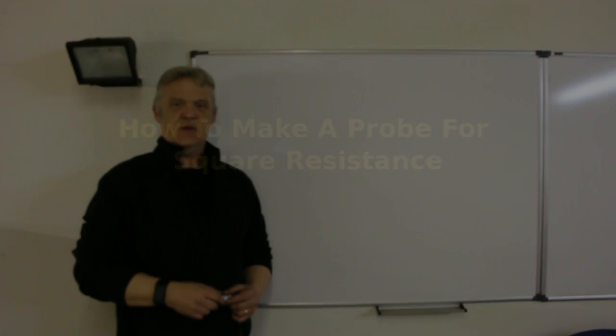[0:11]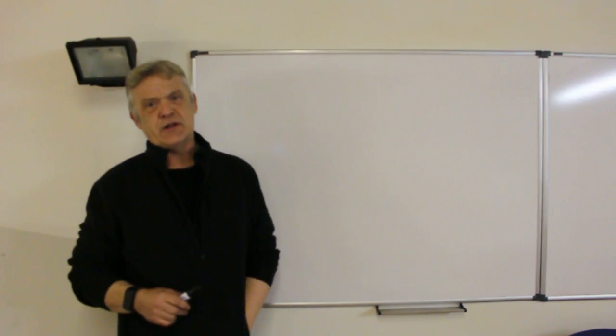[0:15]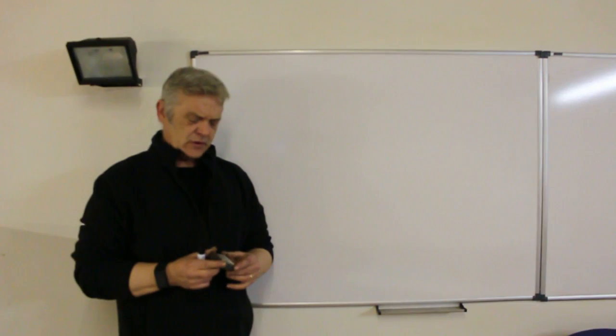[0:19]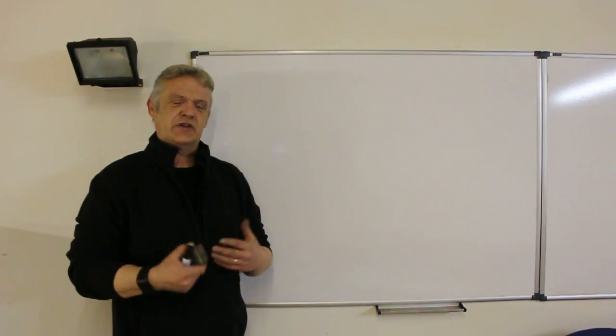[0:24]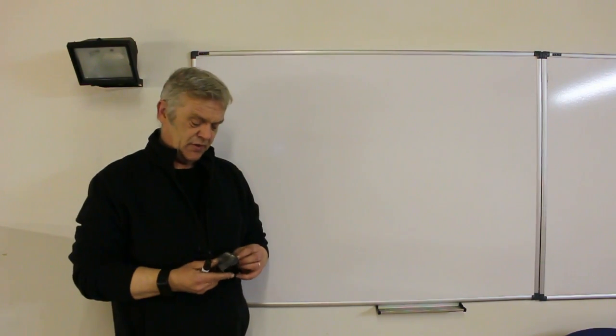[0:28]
So I've been meaning to do this video for ages. It's a really simple one. It's revolving around this thing, which is a square probe. And it's used for measuring the resistance of thin films, sputter coatings, ink coatings, paint coatings, that kind of thing. And I've used this quite a lot. A lot of people have said to me, how did you make it?
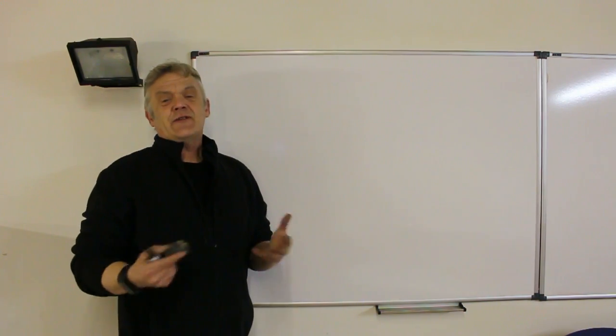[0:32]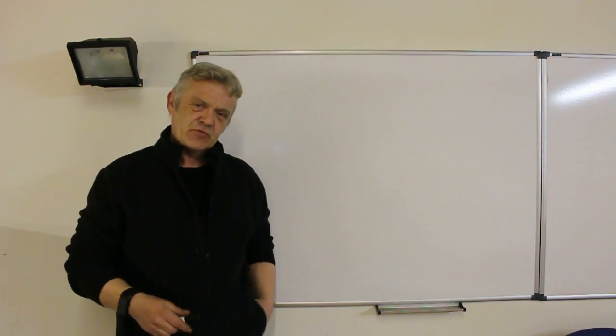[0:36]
So the plan of the video is to explain it a little bit, and then to show you how to make it, and then we'll use it to take some sheet resistance measurements. So the first question really is, what is sheet resistance? And in order to think about sheet resistance, we want to know about resistance per se.
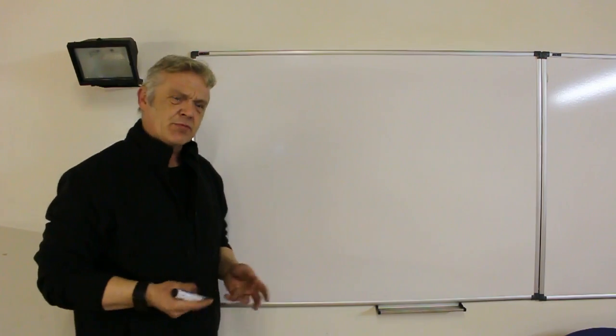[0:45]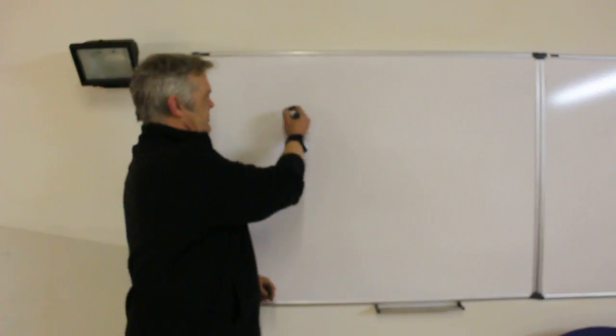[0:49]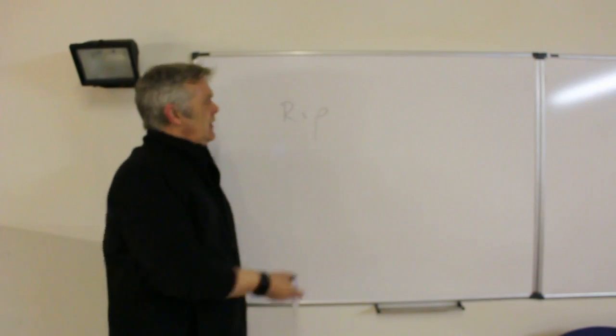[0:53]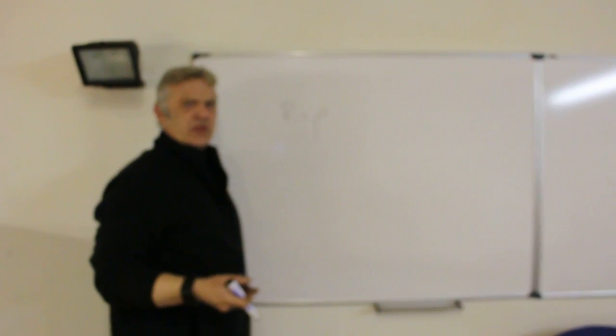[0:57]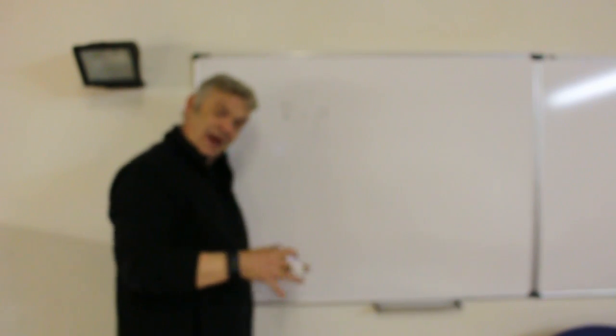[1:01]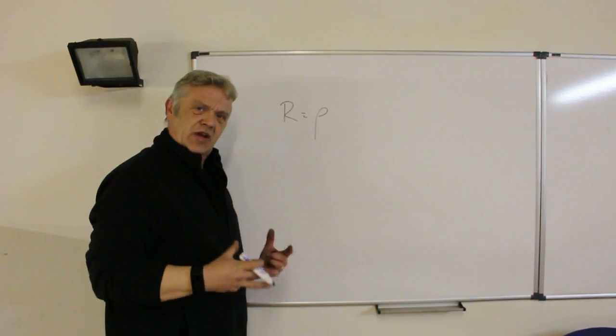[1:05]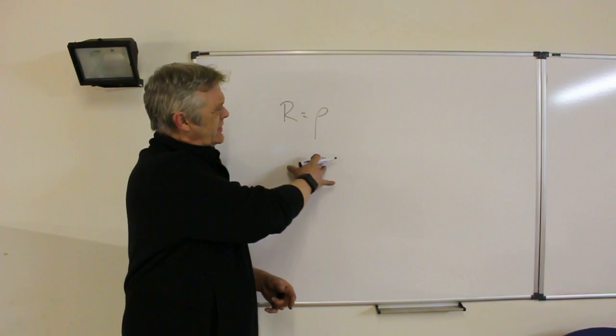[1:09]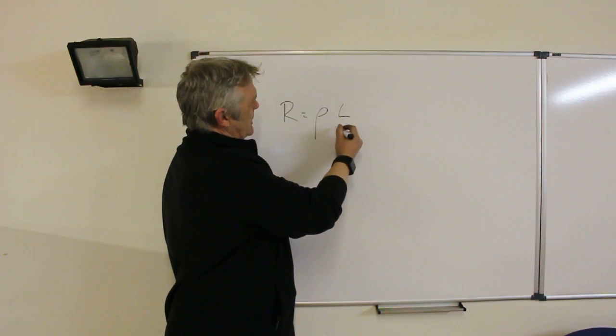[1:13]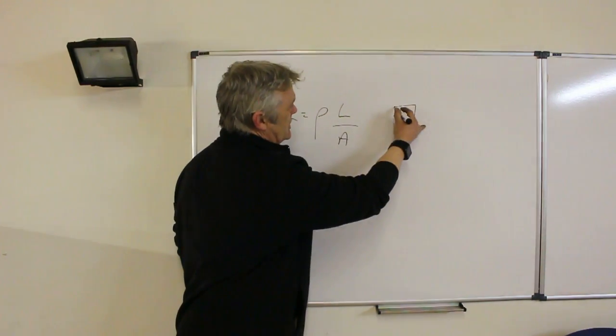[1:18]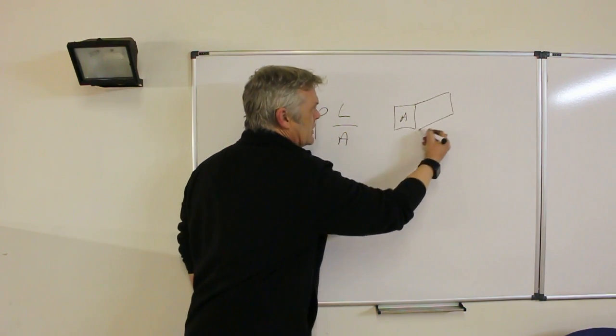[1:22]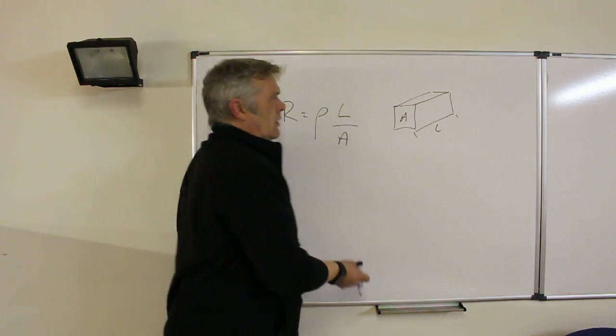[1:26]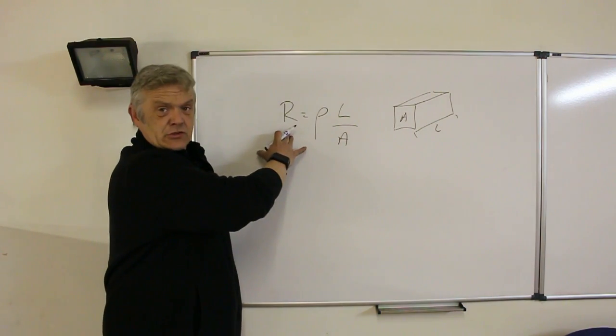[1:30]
Now, resistance is a property of a material dependent on the geometry of the material, because resistance is equal to rho, which is the resistivity. Now, rho is an intrinsic property of all materials. It's the resistivity of the materials. But when we're using an actual material and taking the resistance of it, we have a lump of something of a certain size, and it will affect the resistance, but not the resistivity. So the resistance is equal to the resistivity times the length divided by the area, because we're looking at a block of material. This block of material has an area of some kind of length. And those geometrical factors will affect the resistance of the overall block of material that you're using.
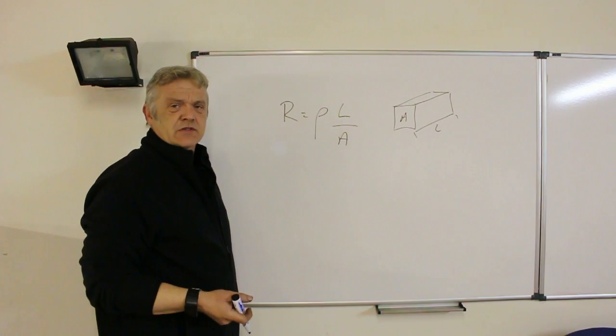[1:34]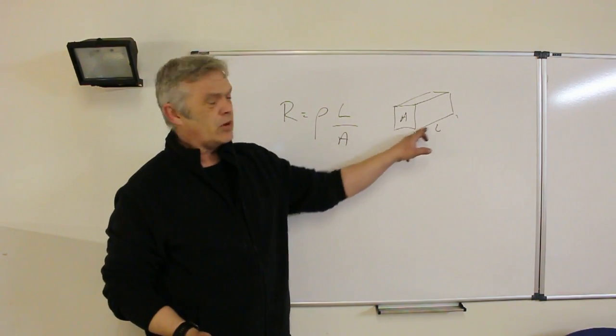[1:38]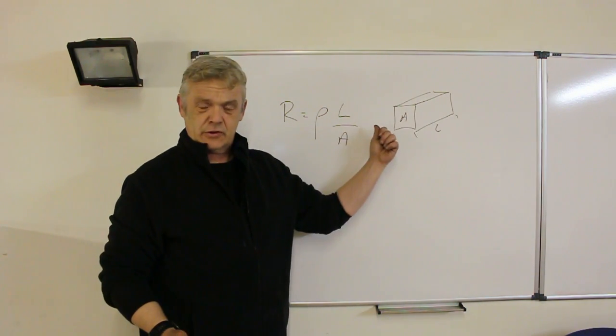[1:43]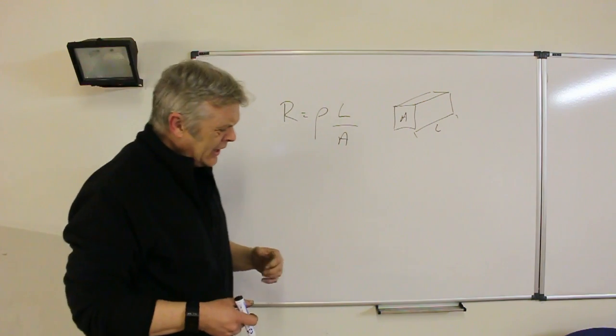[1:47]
Now, when you're measuring resistance of a block of material, what you do is take 1 centimetre by 1 centimetre by 1 centimetre, slap on a couple of copper plates, and take the resistance at the end of those copper plates. And that's how resistance of bulk materials is measured. Now, it doesn't quite apply when we're looking at sheets.
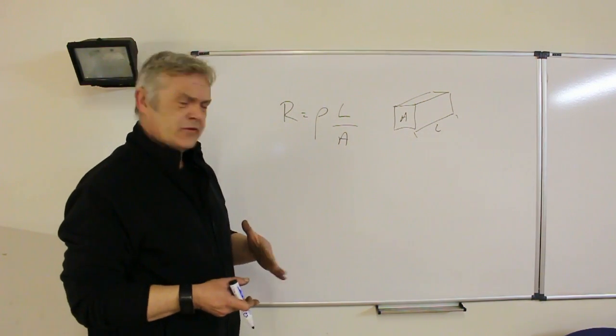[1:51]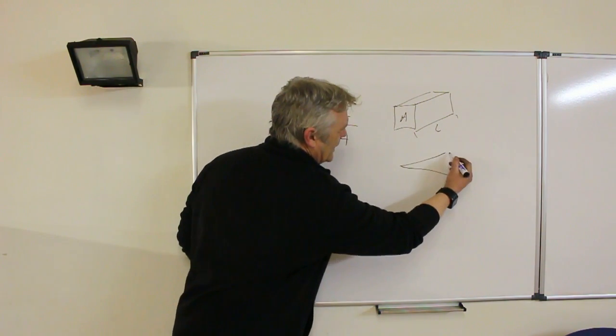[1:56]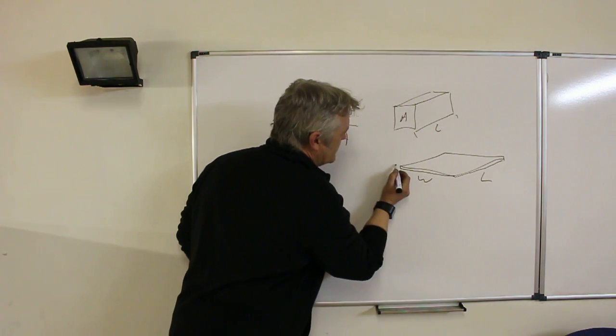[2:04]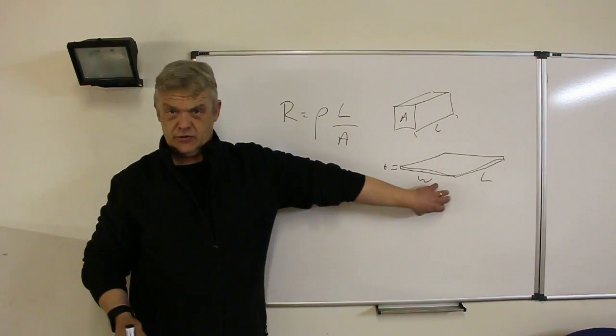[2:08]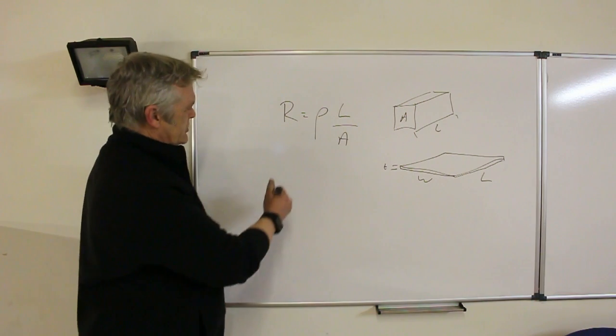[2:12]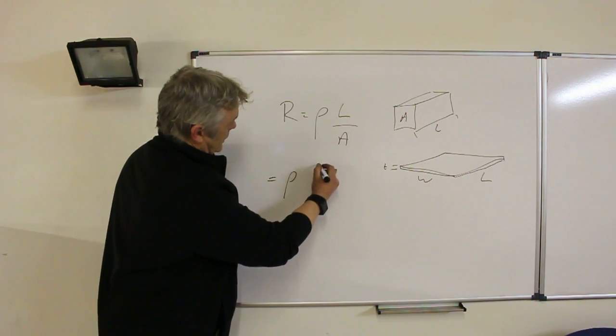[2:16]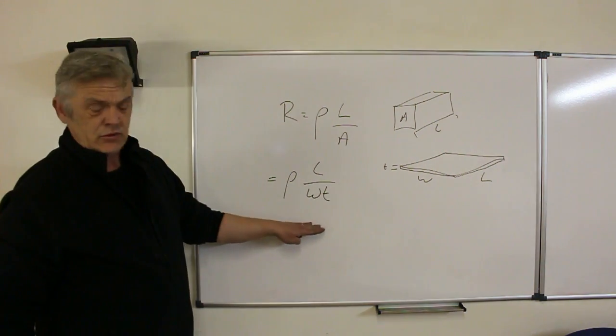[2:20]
Now, sheets are taken to be of uniform thickness. But when we're looking at a sheet, we're looking at a big old plane of something, with tiny thickness, that has some length, some width, and a thickness of T. So when we measure this resistance here, what we're doing is measuring a sheet. So we can say that our resistance now becomes rho times length over width times T. And that's how we're measuring it.
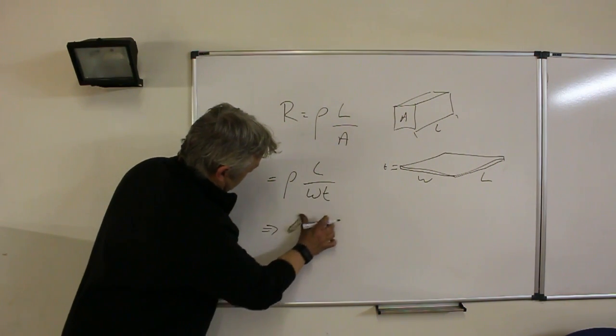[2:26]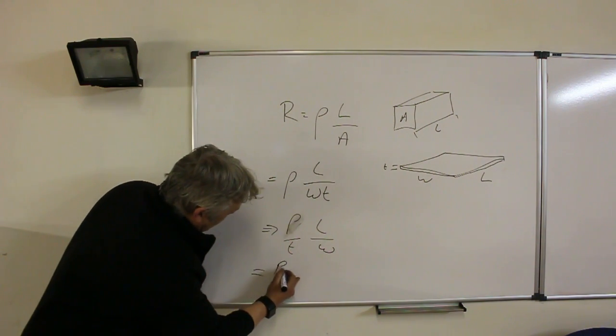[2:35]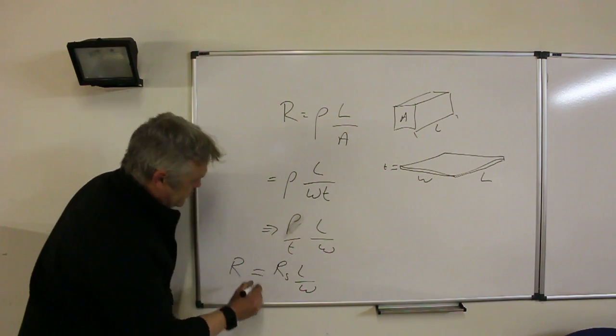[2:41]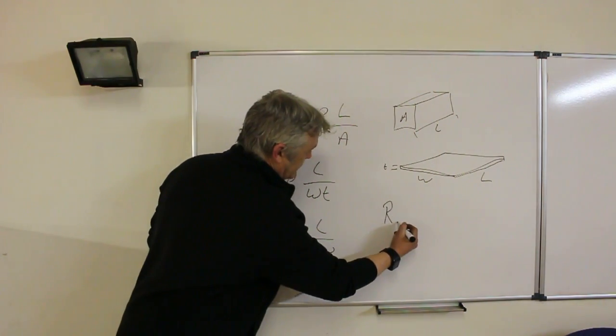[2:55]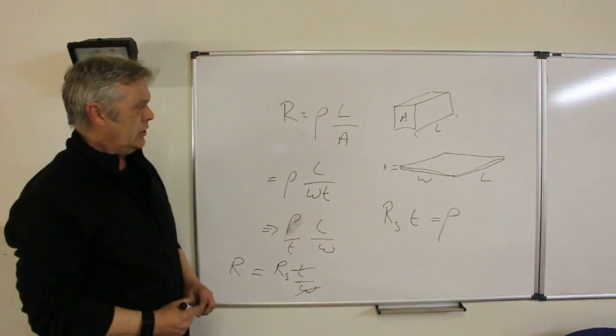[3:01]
If we separate these out, so we get rho over T times L over W, then that becomes RS, which is the sheet resistance, times length over W, which is our resistance. And if these are equal, so this is 10 and this is 10 and this is 8 and this is 8, then these cancel out to give us R is equal to RS, where RS is equal to rho over T. So equally, if we take the RS figure and we multiply that by the thickness, what we get is the resistivity of the material that we've been looking at. So that's how we can use sheet resistivity.
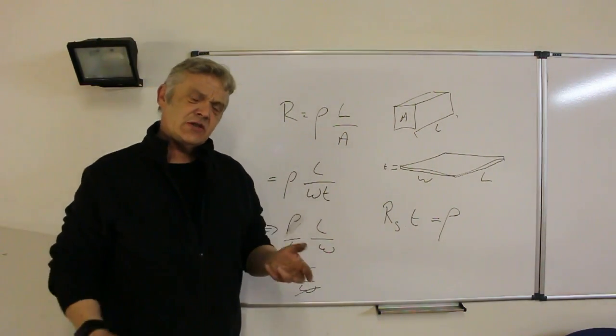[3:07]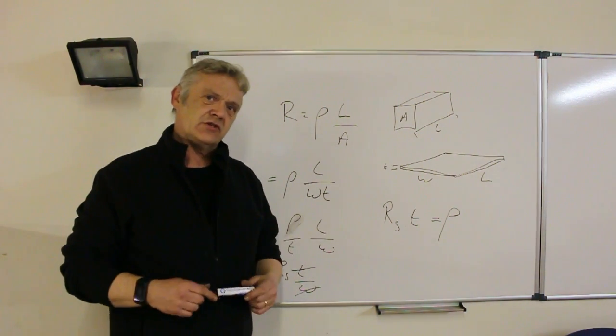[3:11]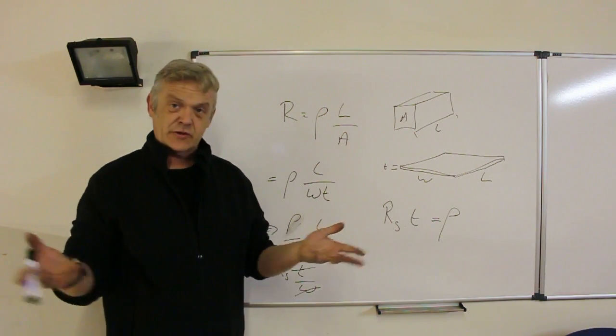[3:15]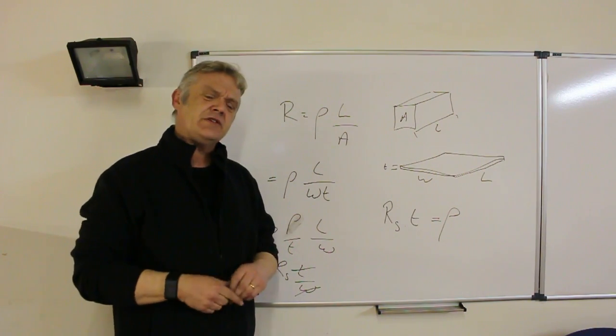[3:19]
But how do you actually measure sheet resistance? Now, sheet resistance has to be on a film of uniform thickness. So there's an assumption there's a uniform thickness. And there's a couple of methods used. One is the van der Pauw method, which is a four-point probe method. And that can be a little complicated and expensive for people to set up.
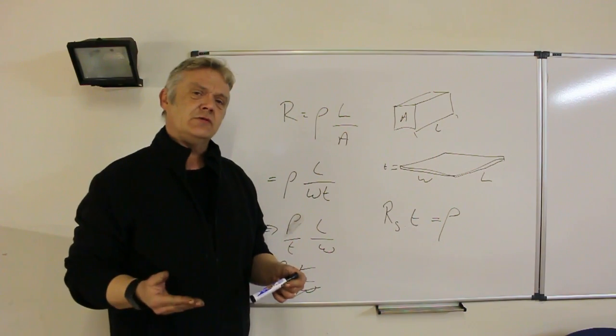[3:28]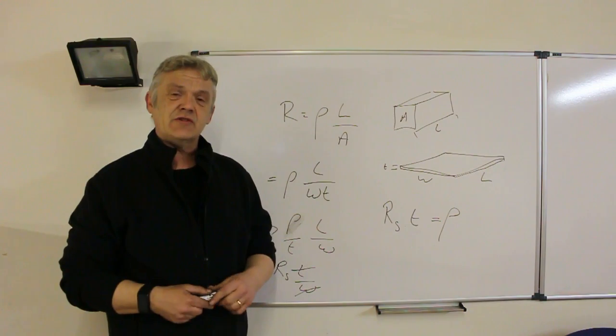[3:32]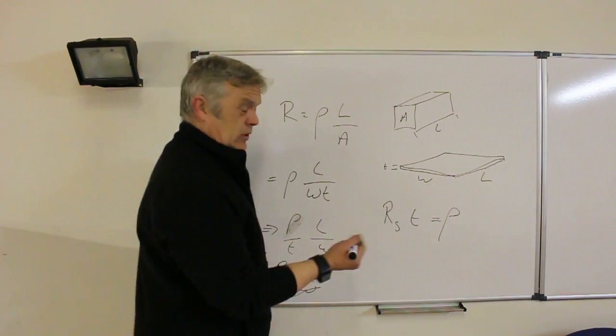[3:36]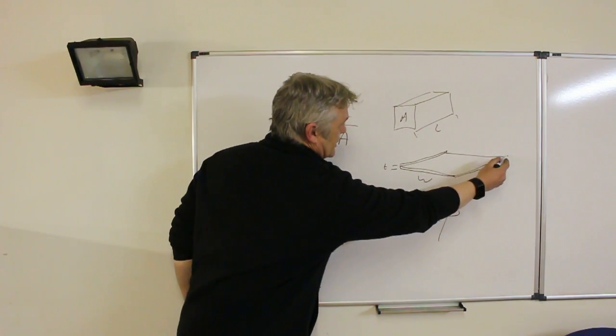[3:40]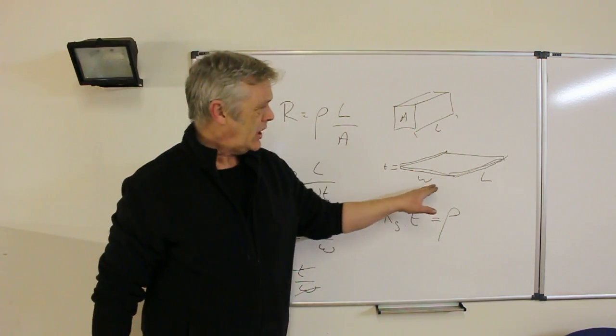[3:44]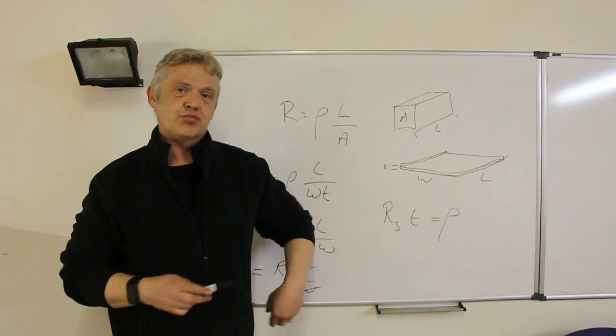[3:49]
So another method is to attach bus bars with an ohmic contact, where the bus bar length is equal to the width of the sheet that you're measuring. So what I'm saying here is, if we stick a bus bar on here and here, and we make sure that those are the same distance apart as the length, what we effectively get is a sheet resistance probe. Now, that's exactly what this is.
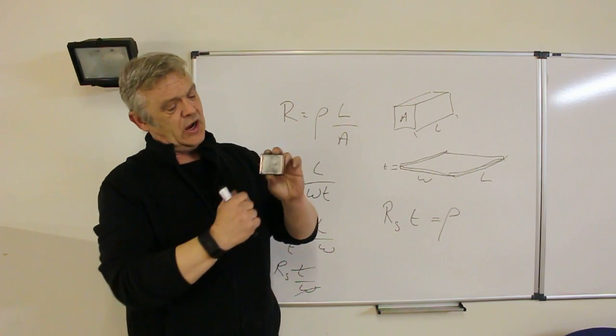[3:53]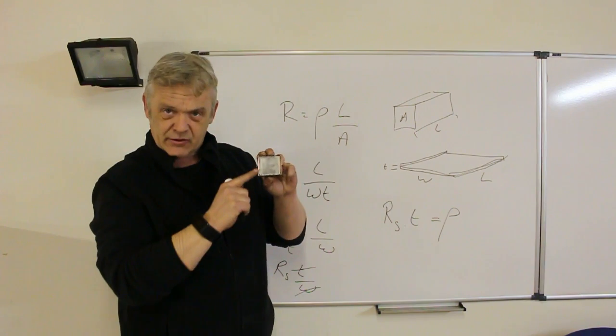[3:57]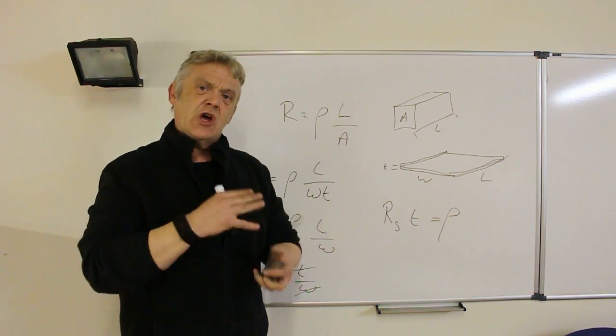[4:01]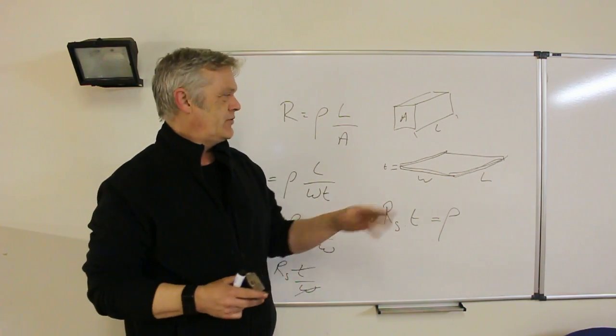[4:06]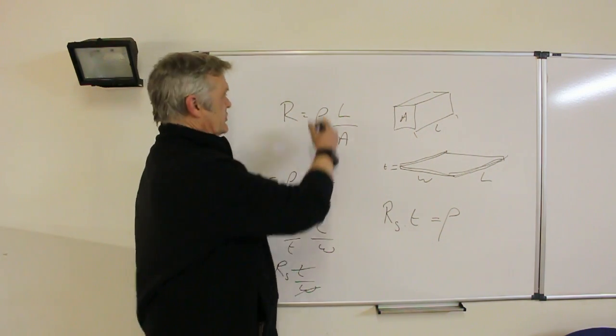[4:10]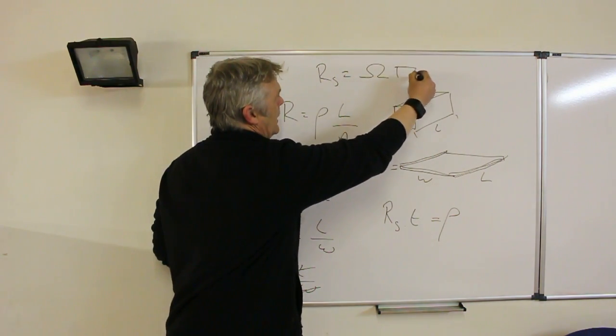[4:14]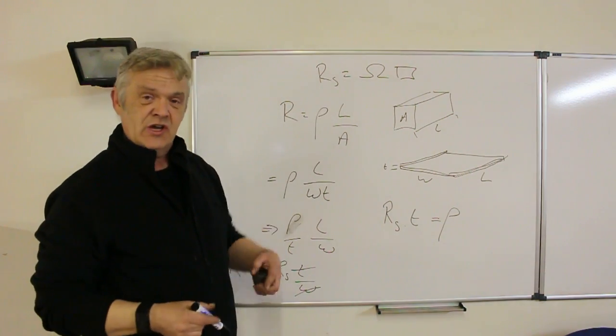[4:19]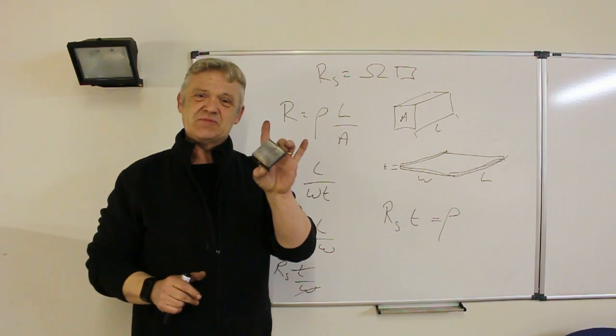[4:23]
These are two copper bus bars, and they're held apart by the same as the length of the bus bar. So when I use that, what I'm actually doing is taking a sheet resistance using bus bars with ohmic contact along the edge of the width of the square. Now, when I do that, the measurement that I get, so RS, is measured in ohms per square. So it's ohm per square, and that's the measurement of RS. So, now we've quickly gone through the theory, let's go off and make one of these.
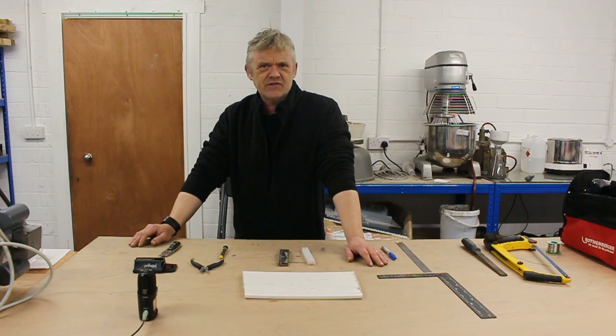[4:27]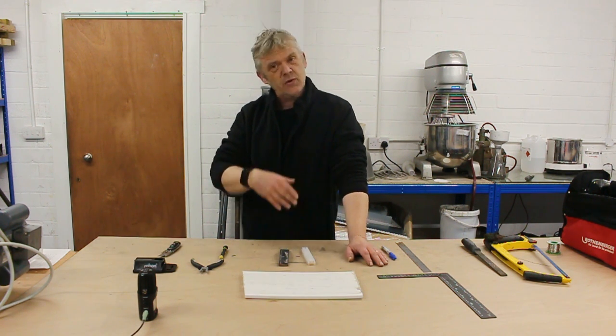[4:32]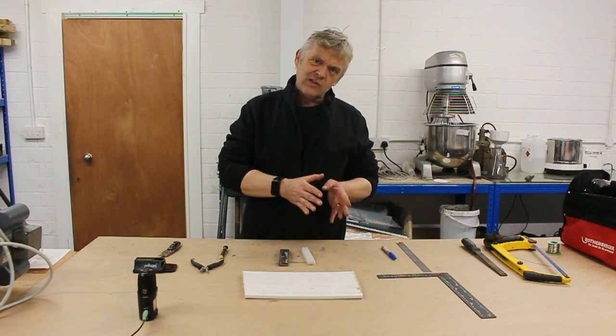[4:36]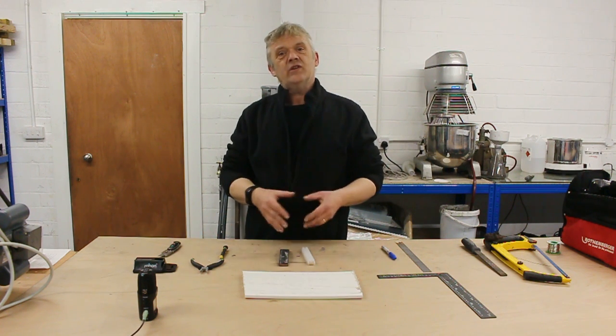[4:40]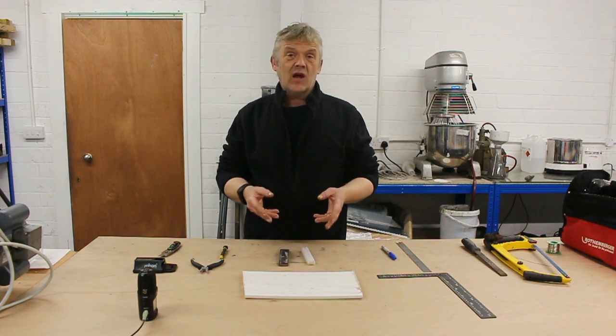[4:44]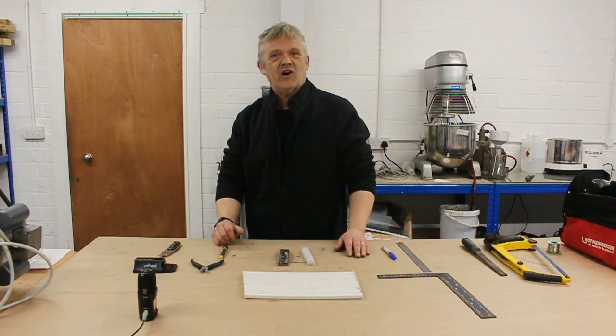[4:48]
So, as we pointed out on the board, one of the curious things about sheet resistance is it doesn't matter how big the square is that you make, because we divide length by width as part of the equation. So, as long as the length and the width are identical, that is, it's a square, then the size of the square is completely unimportant. So you could do 1 centimetre if you like, you could do 10 centimetres, you could do 100 centimetres. It really doesn't matter, as long as the length and the width are the same.
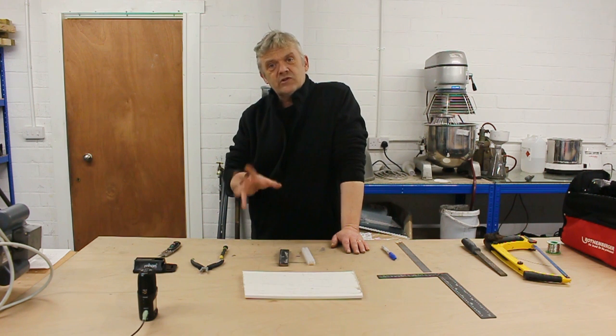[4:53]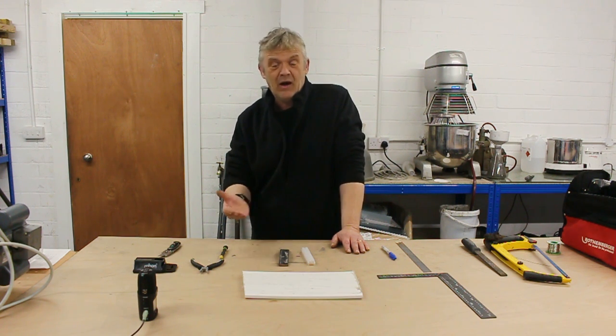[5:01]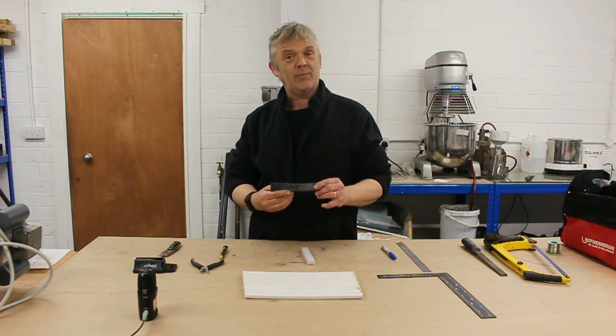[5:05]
So what we're looking for is some materials to make our bus bars, because we're using the bus bar method as opposed to the van der Pauw method. So we need something to make our bus bars, and of course there's nothing better than copper. Now, we can get a lot of copper from all over the place, and I just so happened to have a bit of this.
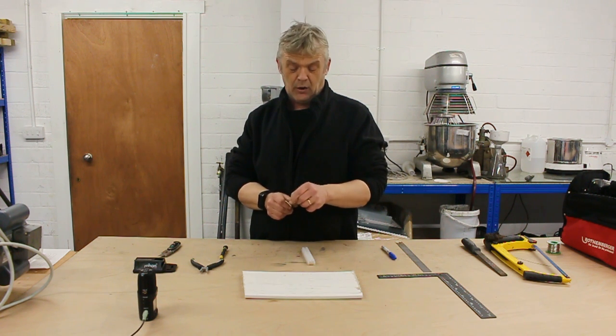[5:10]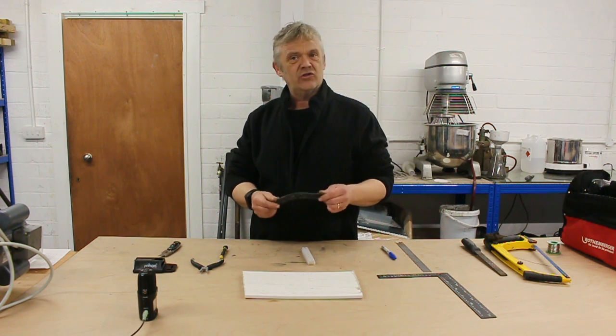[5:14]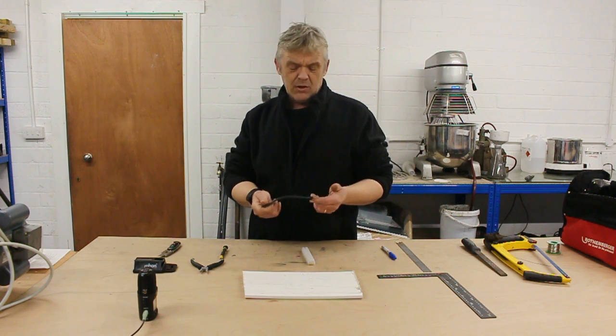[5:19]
This is a bit of old lightning conductor. It's a solid copper rod covered by a plastic casing. I had a length of this from somewhere, and I'm going to use that to make my probe with. Now, this is scrap, but you can buy this stuff in the bar that you see here and use it nice and clean. We're using scrap, so we're going to have to clean it up.
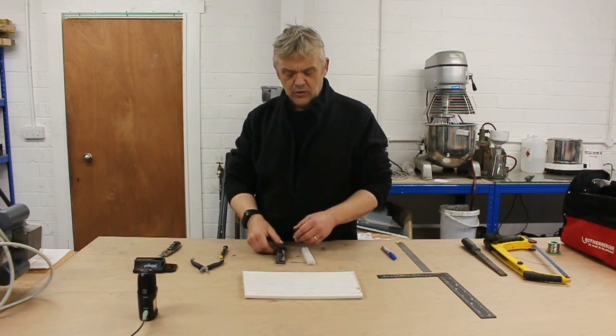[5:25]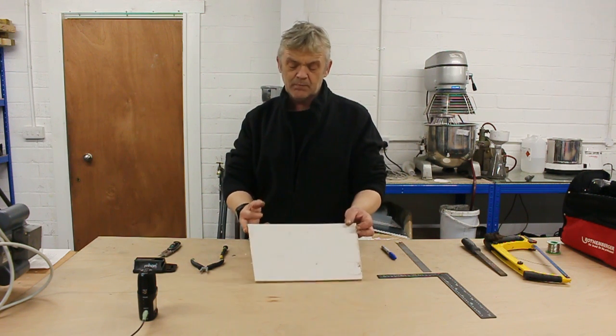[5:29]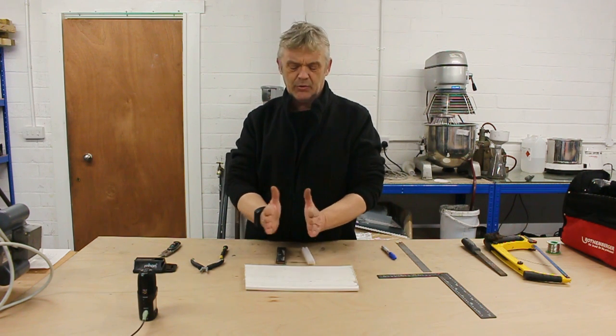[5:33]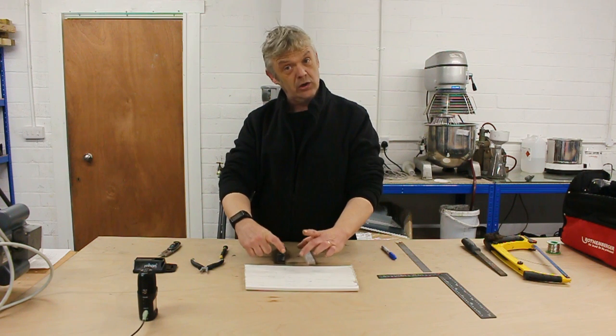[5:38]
The other thing I'm going to use once I've cut the sizes is a piece of this stuff. This is builder's board. I'll cut the square out of this that I want, allowing for the thickness of the bus bar, so I put the two bus bars together, then they'll be held apart by the same distance that they are long. And that's the basis of my square probe.
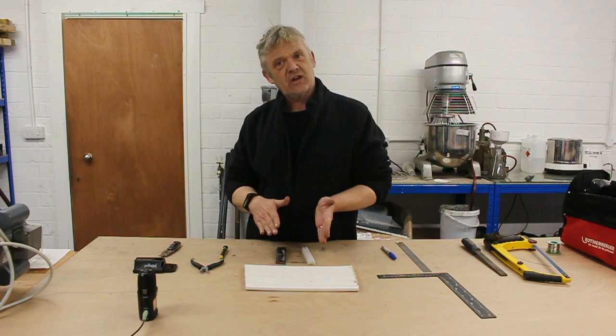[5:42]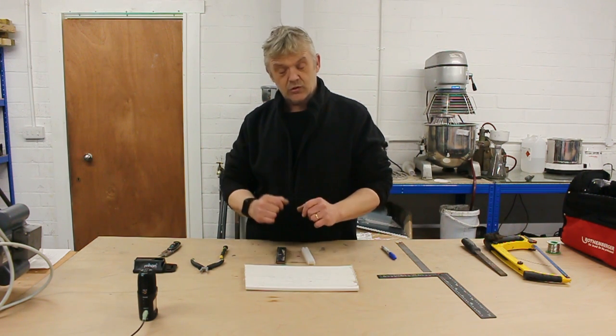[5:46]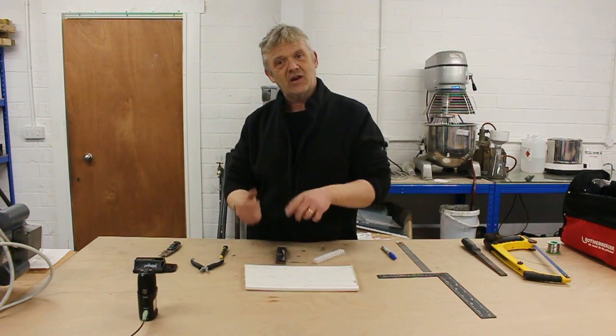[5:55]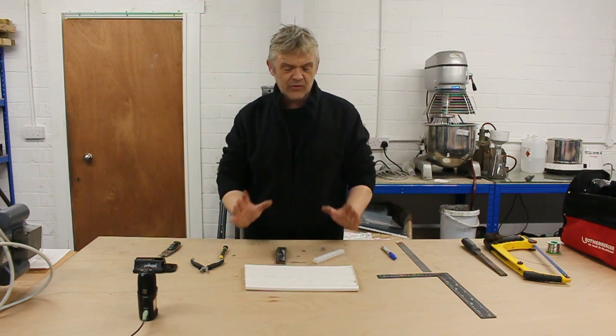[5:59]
Now, in order to get something nice and easy so that I can put the probe tips in from the meter and screw them down and get a good contact, I'm going to use this to make some contact. So I'll cut the brass bits out of here, flatten the edge, solder them onto here, and then I can drop my contacts from my meter into there, screw them tight, and I'll have myself a square probe. So that's what we're going to do.
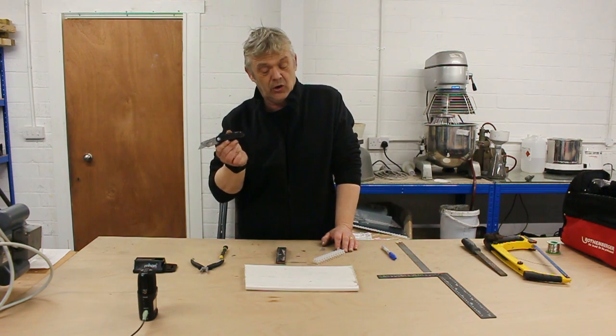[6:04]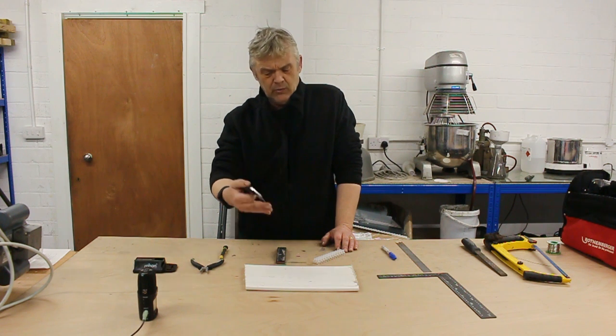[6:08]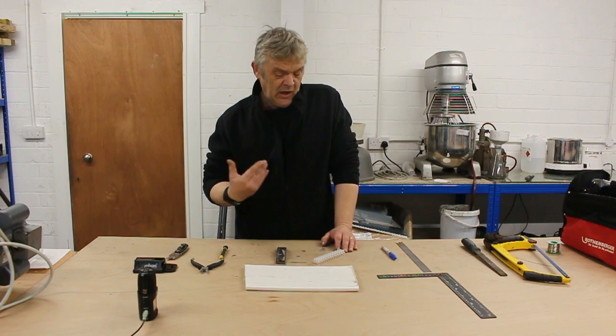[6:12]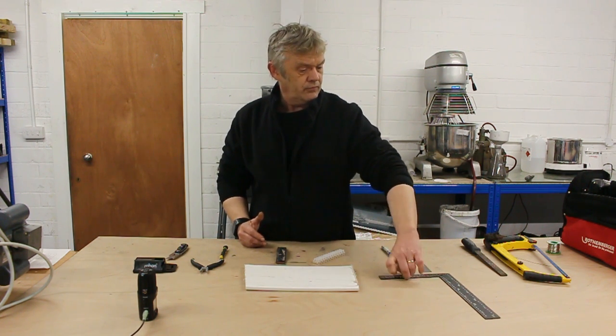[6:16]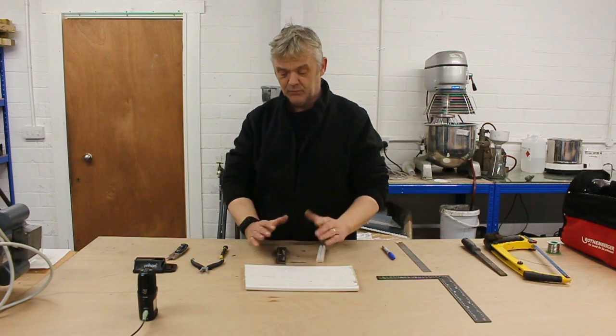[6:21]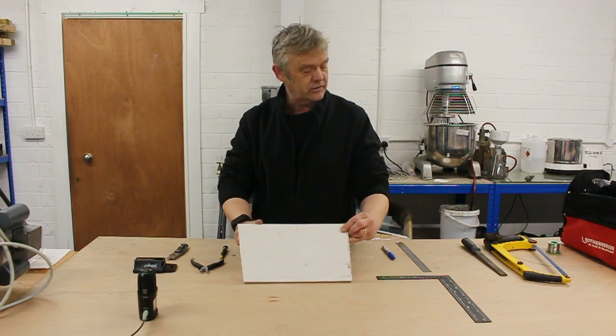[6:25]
Now, to do that, we need a cutting implement for the builder's board, which is a polyurethane with a PVC covering. So a trimming knife blade, a carpet knife will do very nicely. We need a square edge. We need an angle, a nice triangle there, so we get nice square edges. Marker pen, our materials that we've got. Remember, this edge is straight, so we'll be going from this edge in all our cutting and measurement.
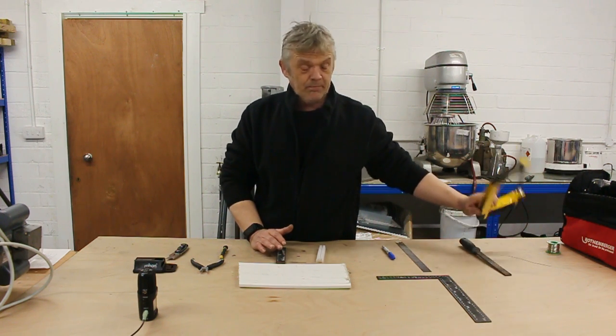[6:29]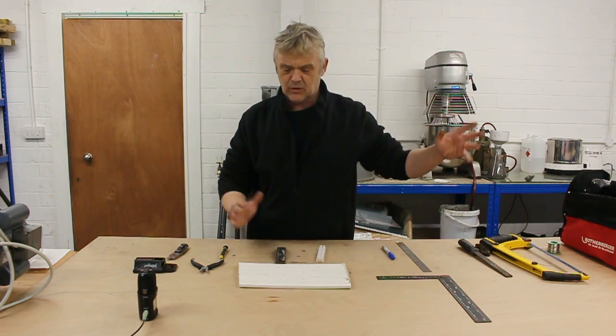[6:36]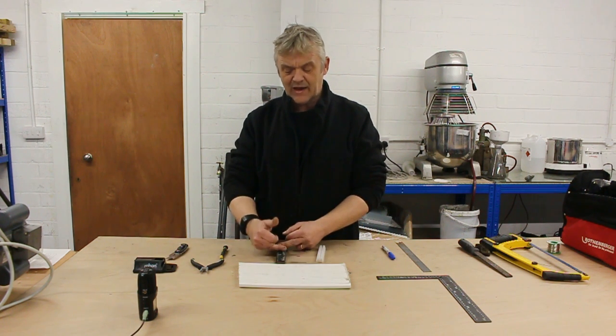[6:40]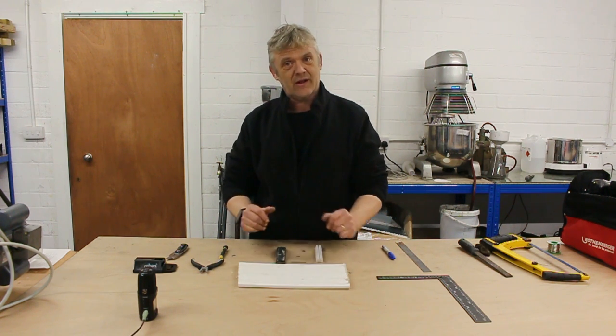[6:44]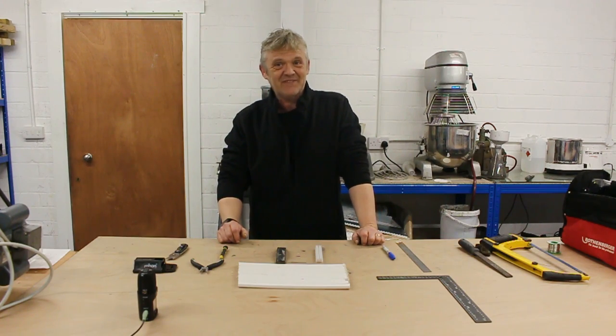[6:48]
We're going to be working with metal, so we need a hacksaw, flat file, some wire wool to clean everything up, and then we have some soldering equipment there. So that's the equipment we're going to need. There's the material we're going to work on. What we're going to do is cut that to length, clean it, solder on these, cut that board to length, glue it together with some super glue, and we'll have our basic probe. So let's get on with that.
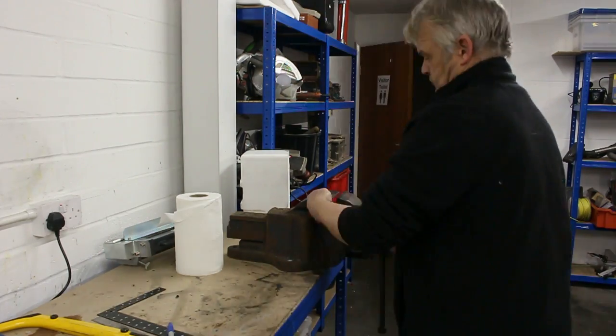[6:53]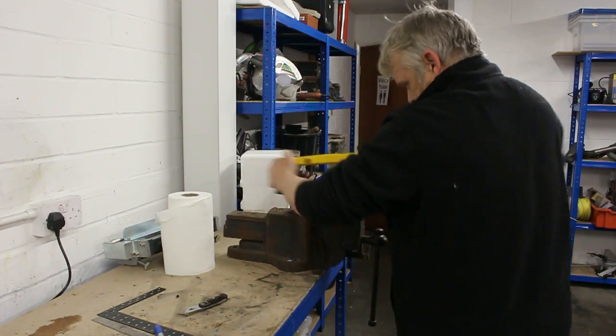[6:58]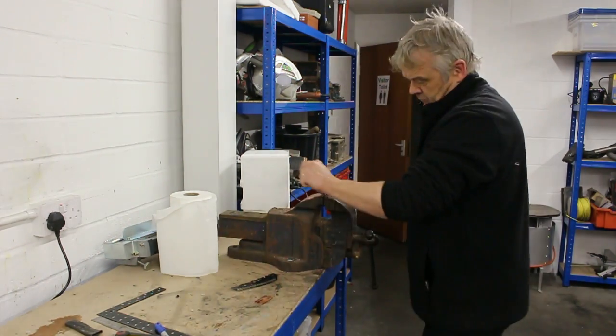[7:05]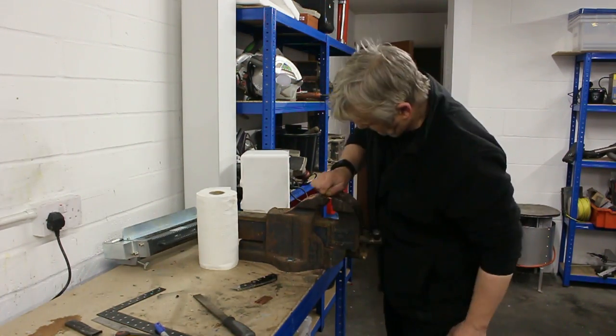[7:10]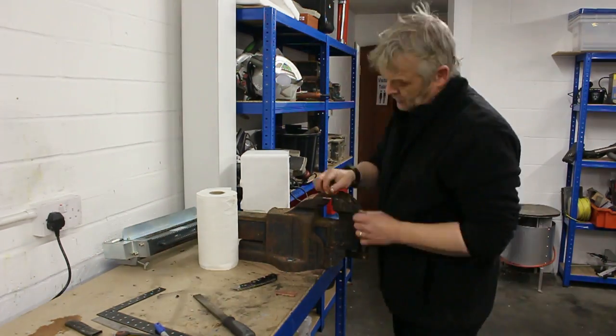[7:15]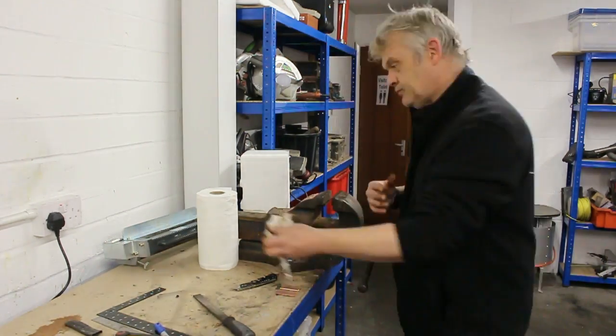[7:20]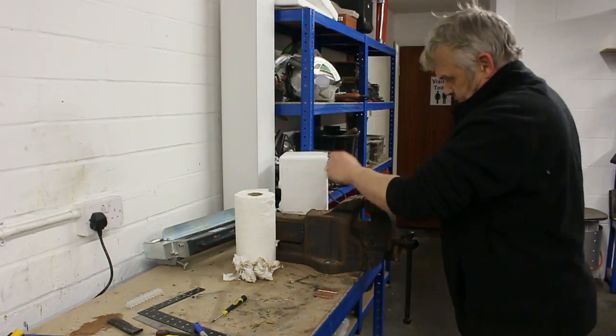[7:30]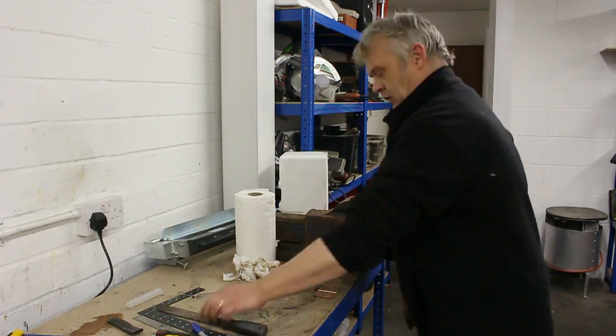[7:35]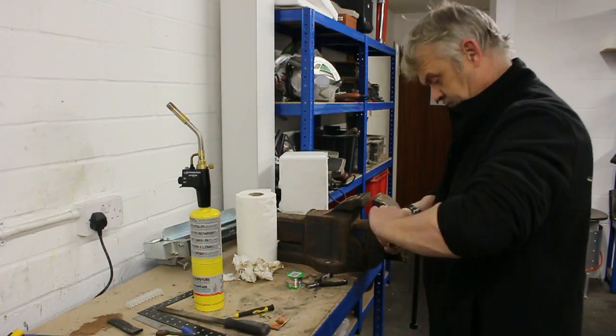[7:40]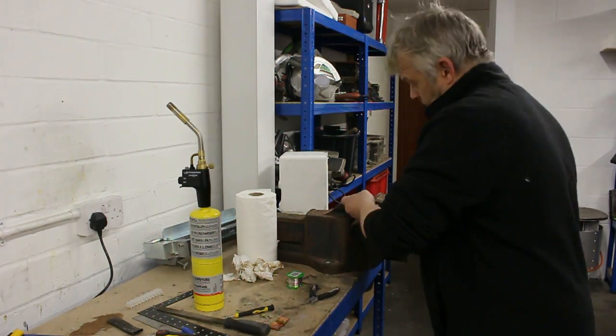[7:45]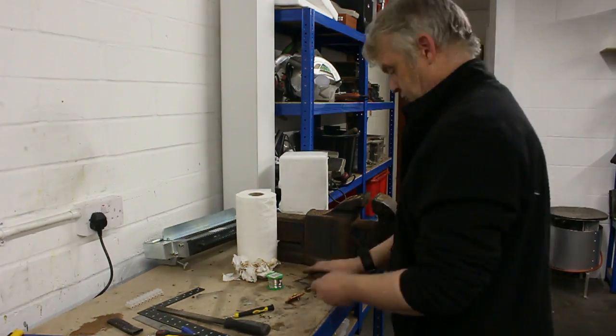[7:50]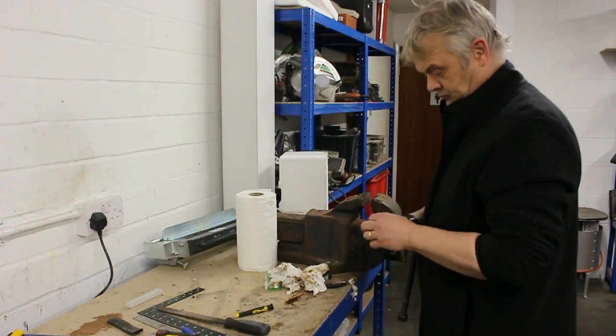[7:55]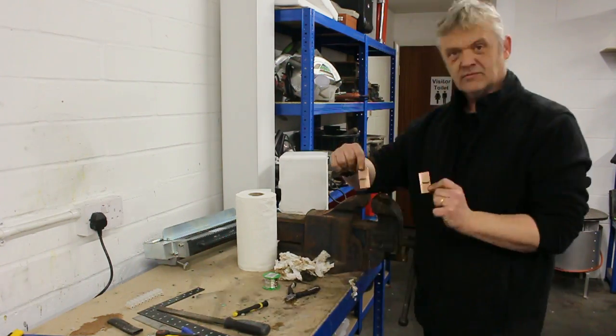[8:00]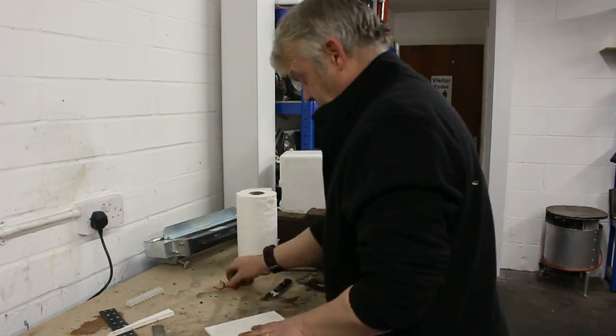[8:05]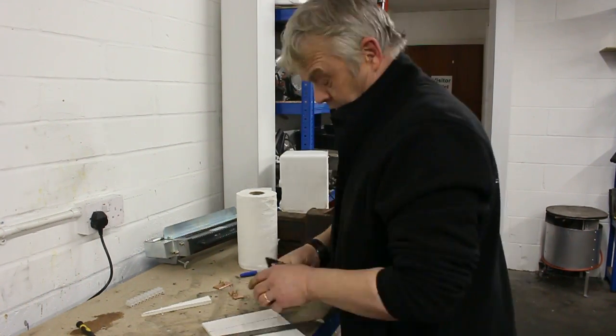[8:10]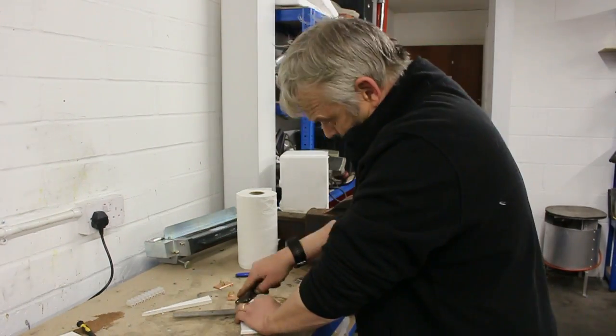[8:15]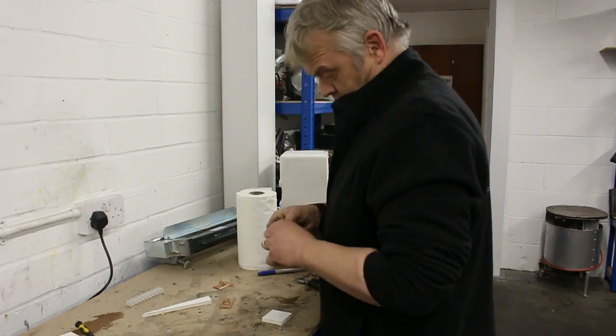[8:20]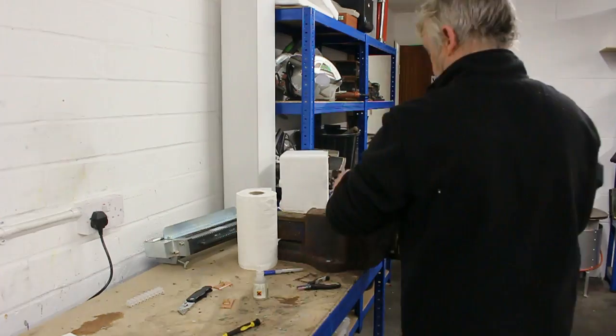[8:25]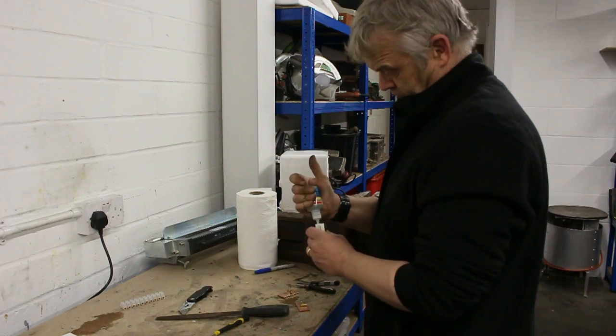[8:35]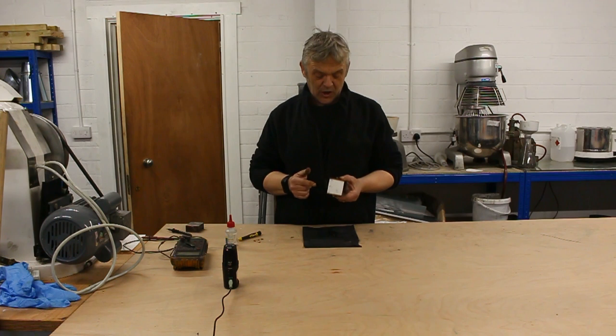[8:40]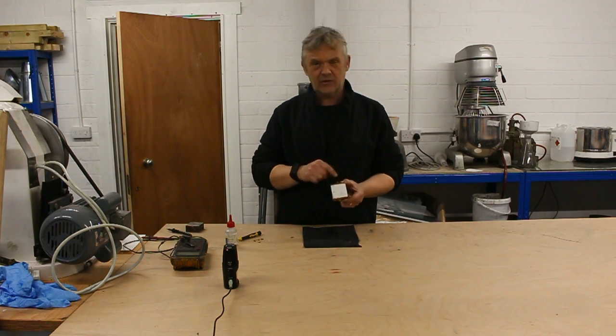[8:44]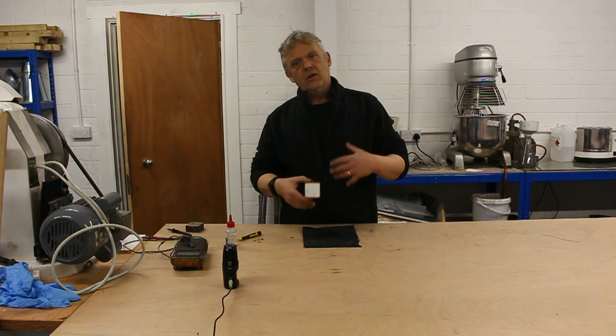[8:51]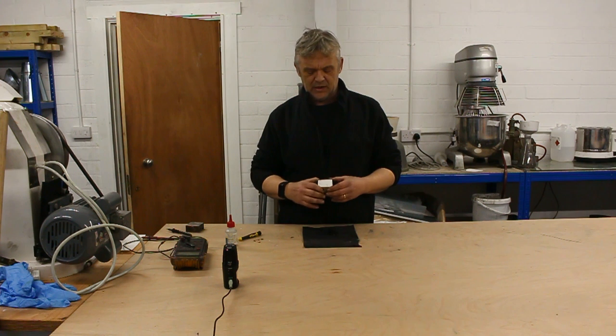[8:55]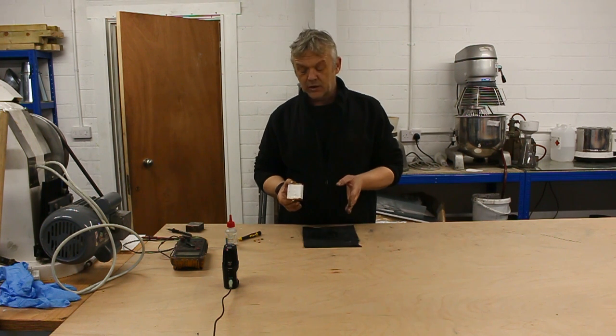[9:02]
What's important about this is the distance apart is equal to the length. In this case, it's 50 millimetres. Now, I used a bit of builder's board and some copper lightning rod, but you can use whatever you like. You can use a bit of brass if you can find that, a bit of copper if you can find that. If you can't find builder's board, use a bit of wood, something that's insulating to hold that distance apart. So it really doesn't matter what it is that you use.
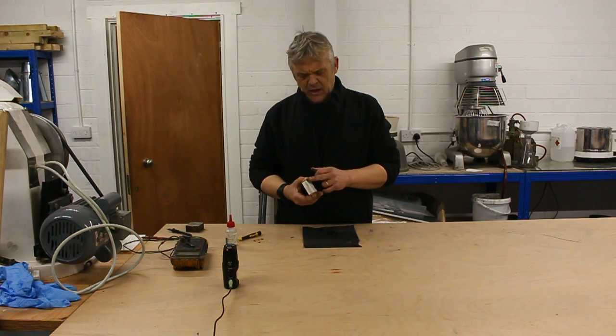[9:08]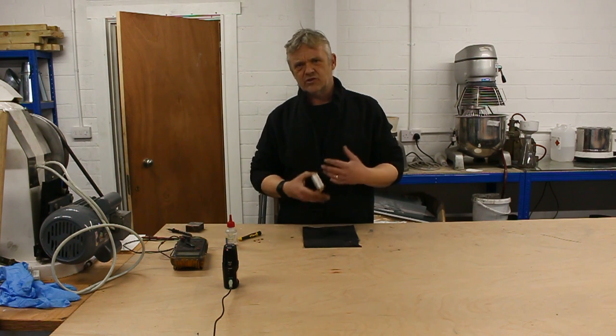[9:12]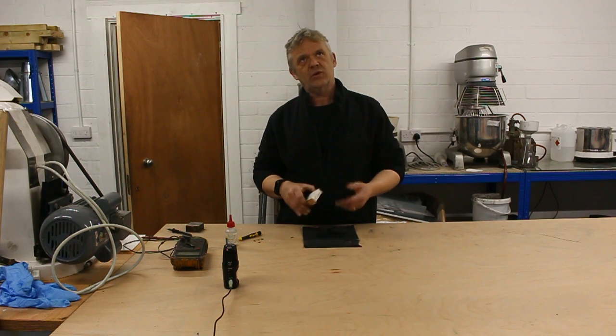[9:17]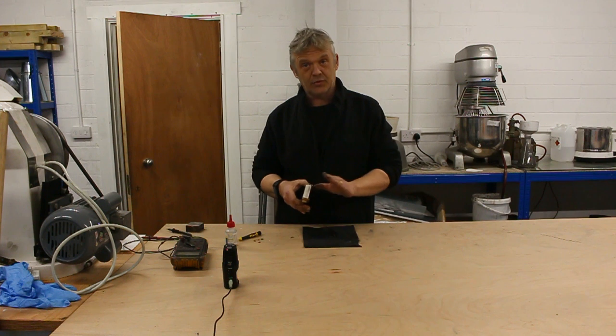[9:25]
What matters is that we can make a nice contact along this edge, a so-called ohmic contact. An ohmic contact means that there's no PN junctions, no Schottky barriers, nothing like that. There's good contact between two conductors, so that's going to be no oxides, a nice firm contact, as little ridging as you can get. So we need to be able to make an ohmic contact between what we're measuring and our probe in order to use this bus bar method.
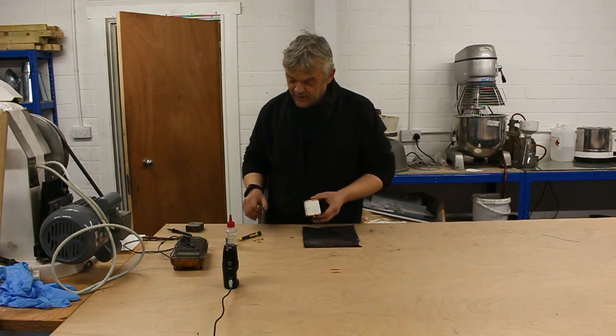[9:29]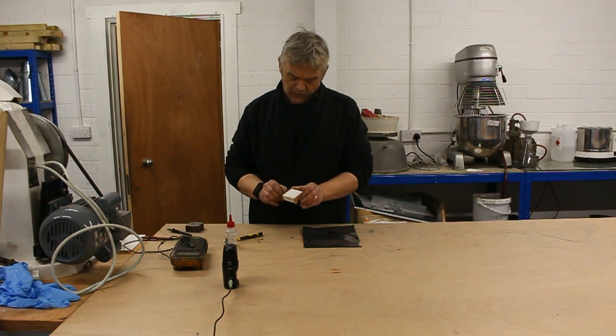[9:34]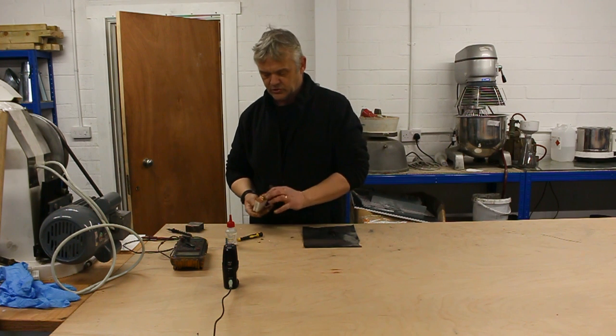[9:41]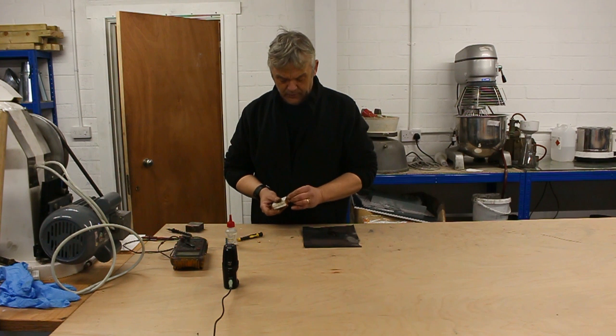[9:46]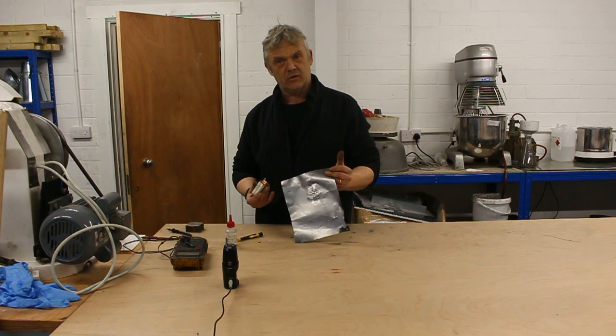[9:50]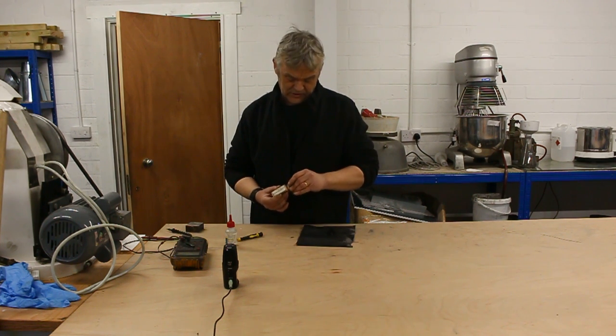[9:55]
But that's it finished. So all we have to do really is connect a meter to that and then press that onto something to get a square resistance reading. Now, I'm obviously putting the screws back in because I made this one a bit of terminal block so that I could hold the meter in there. Then what we're going to measure is this thing here on the bench, and that thing is a piece of graphoil. It's about 100 micrometers thick, and we're going to measure whatever the square resistance of that is. And equally, remember the size of the square just doesn't matter as long as it's square, and that's why.
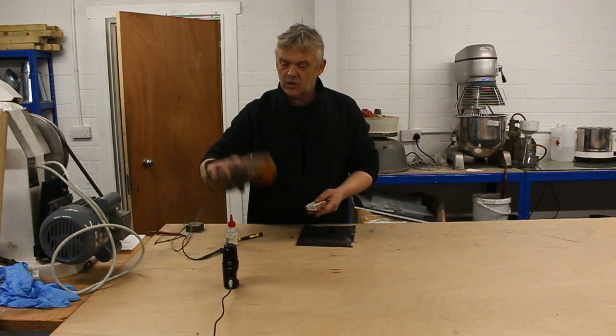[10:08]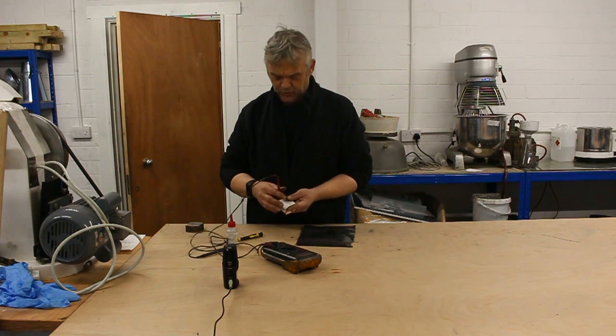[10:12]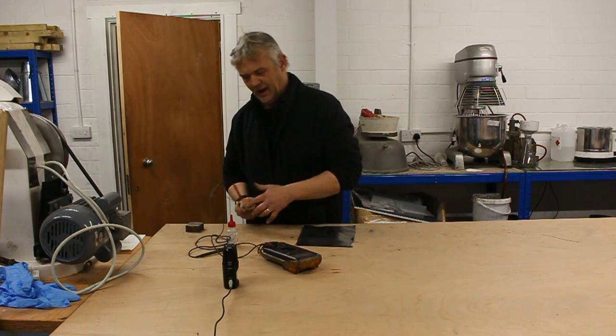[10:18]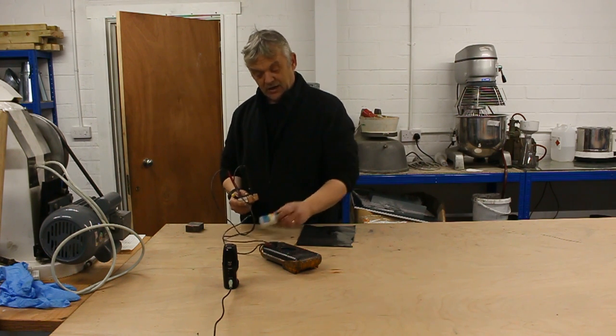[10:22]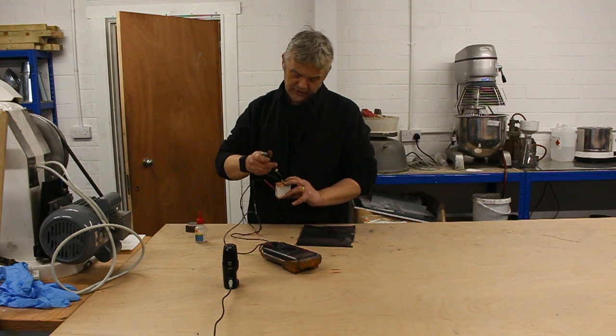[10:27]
So if you remember the math on the board, then that should help. And the reason we put these terminal blocks in is because it's really awkward trying to hold everything together. So if we just put the probes in there and tighten that down, then we get a nice contact here as well, and we'll get a good reading from that. Oh, incidentally, I just super glued those together. Now, super glue's fine. Once the super glue is dried on this builder's board, it's actually really, really strong. It's stronger than the original plastic, in fact.
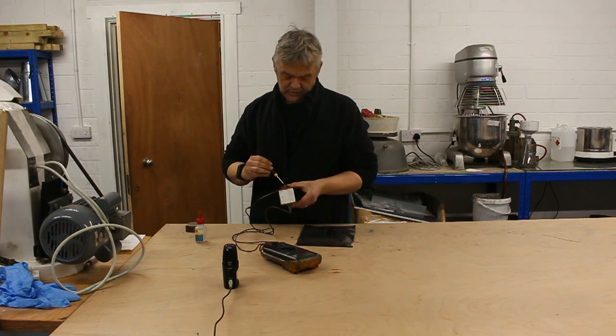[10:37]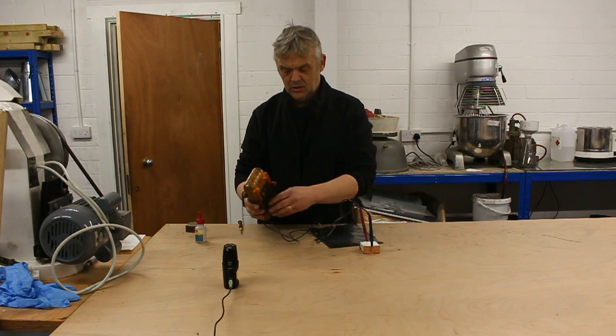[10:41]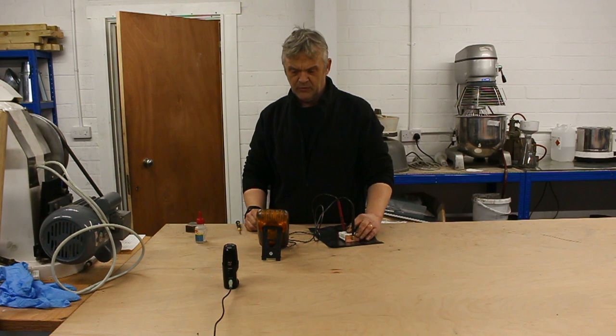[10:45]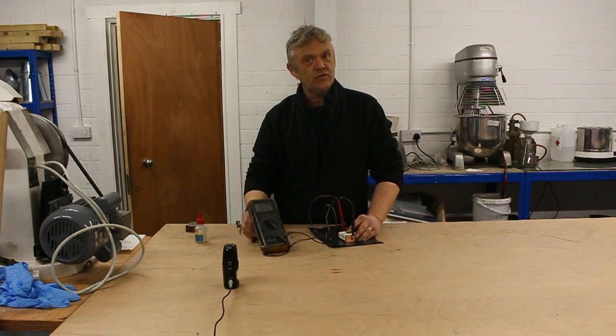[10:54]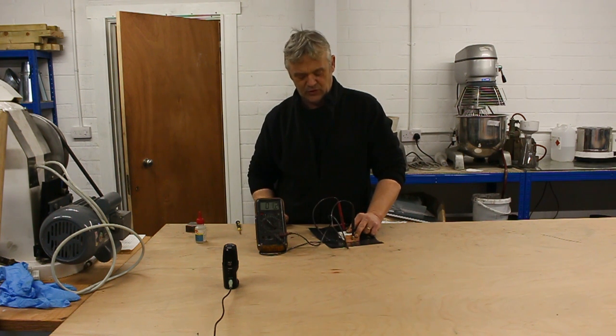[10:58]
Turn our meter on. Set it to an ohms reading. Pop that on, and we will get a square resistance reading. Now then, we've got a square resistance reading of that of 1.6, if you can see that. It's 1.6 ohms a square. That's what we're getting from this piece of graphoil here.
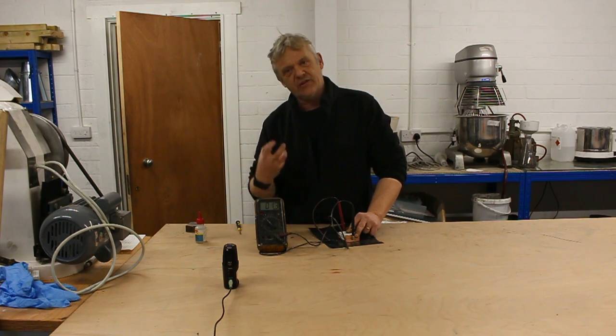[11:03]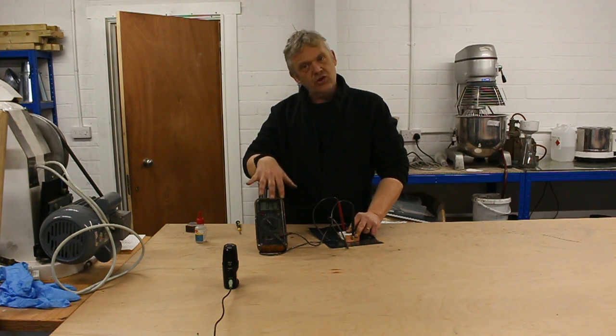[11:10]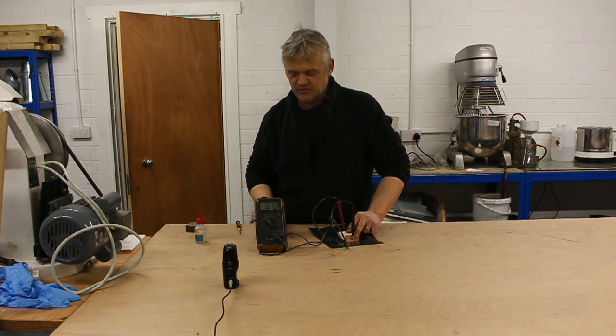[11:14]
Now, the contact may not be brilliant, so we can put a clamp on there just to squeeze that contact down a bit more tightly. It's now reading 1.3, incidentally. And if we get a good contact there, we should find out that that's around about an ohm a square, which is about right for this piece of material.
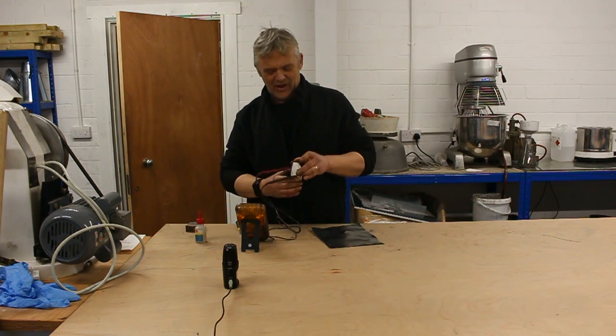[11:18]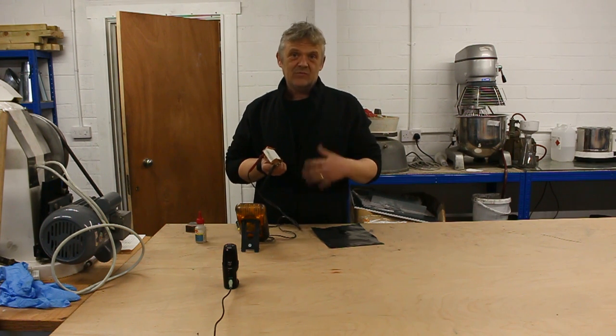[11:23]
Anyway, I've been promising to do that for absolutely ages. There is a square resistance probe based on the bus bar method, how to make it, and some of the math on why it actually works.